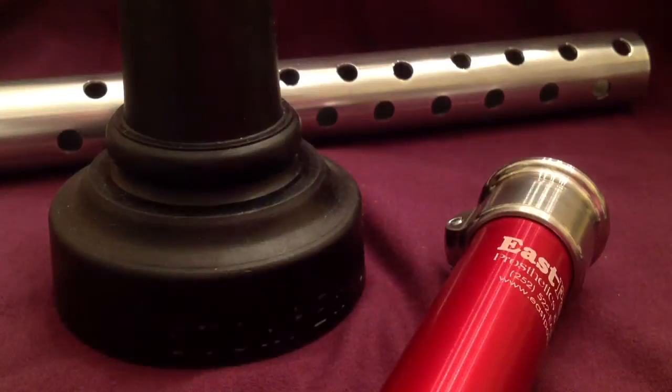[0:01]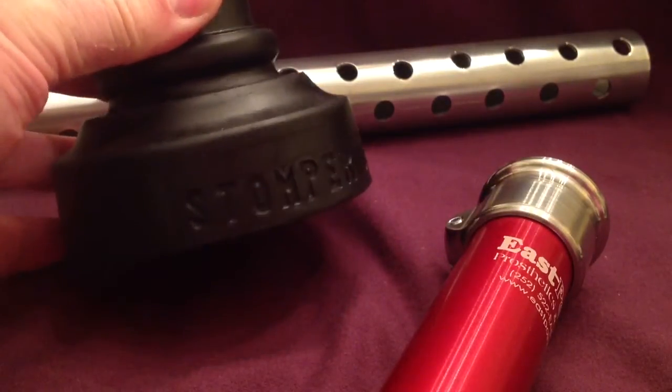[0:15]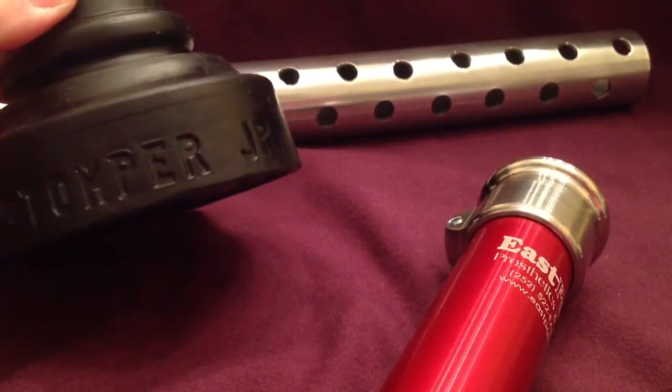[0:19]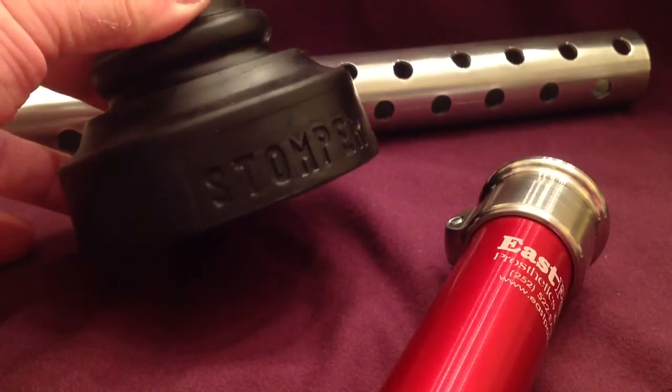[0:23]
All right, this is for making an adjustable stomper for transfemoral check socket prosthetic fitting or early prosthetic fitting. The key components. I put this together because the parts list that I had from years ago, a lot of those things aren't available anymore, and so I had to source them.
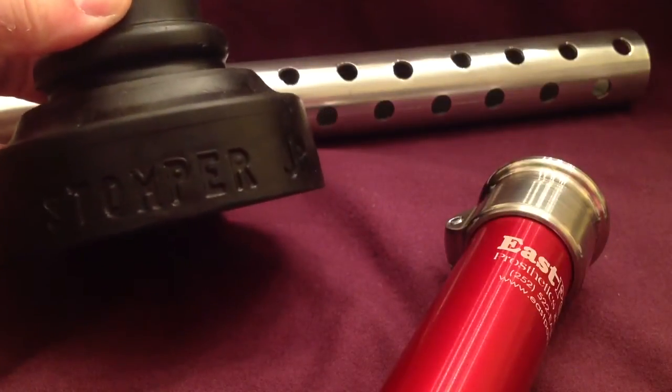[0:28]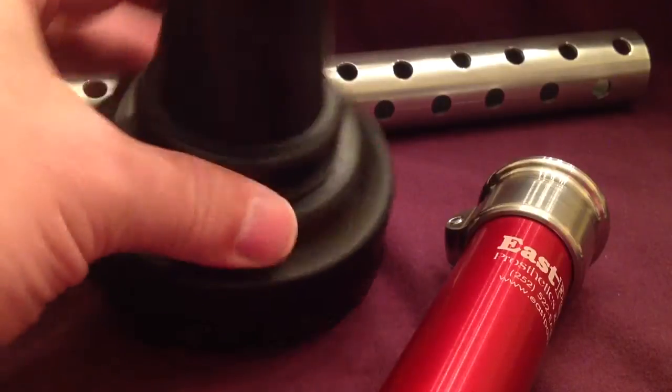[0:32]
I figured to make it a little bit easier, and if you've never done one of these, make it a lot easier. Stomper Junior here, that's readily available from SBS. It's just an overgrown crutch tip, basically.
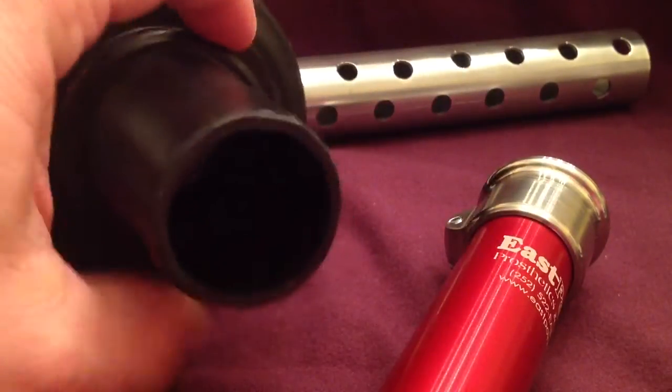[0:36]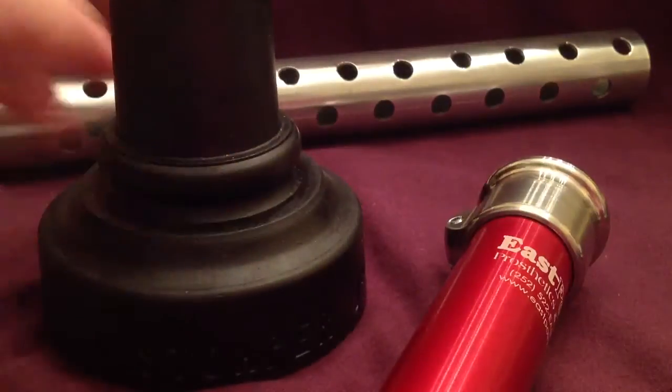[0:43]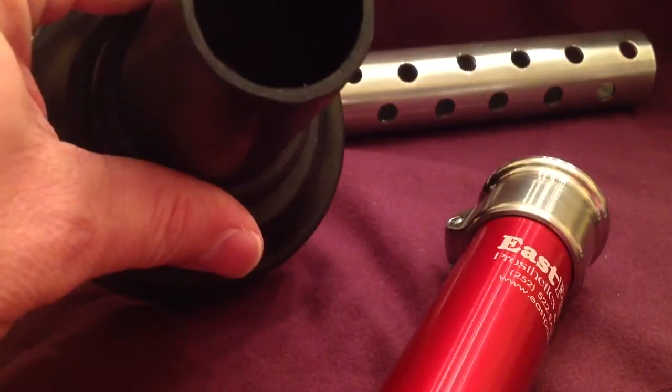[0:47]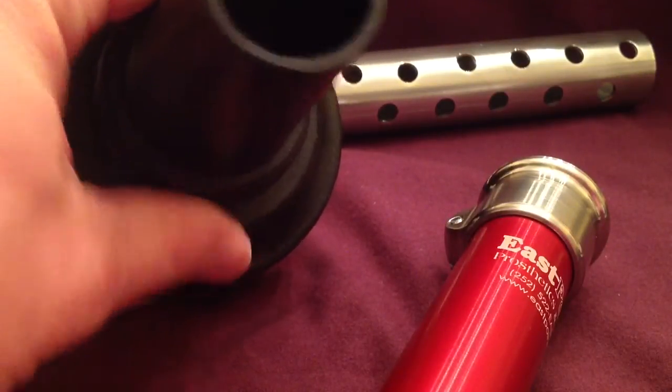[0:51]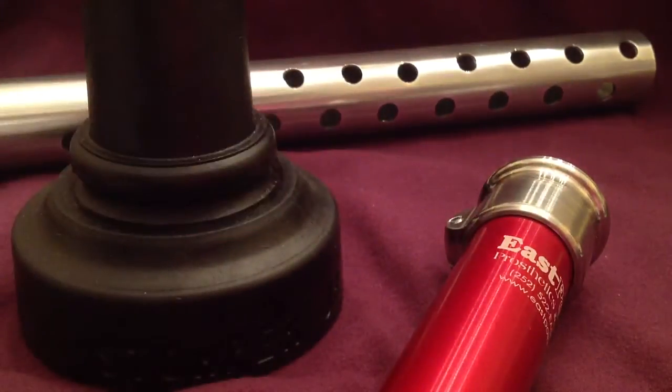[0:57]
The Junior refers to the size here, and that's sized to fit a 30 mm pylon, and it will take the outer sleeve tubes. So you can probably put something close to 40 in it if you needed to. The Senior is the same basic design, but it's set up to take like a 2-inch PVC pipe for someone wanting to do a shower leg or something along those lines.
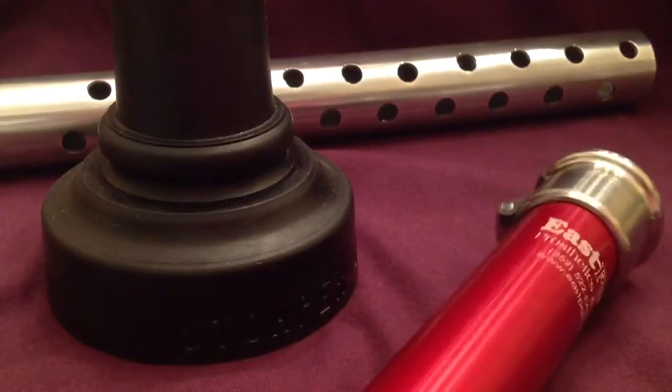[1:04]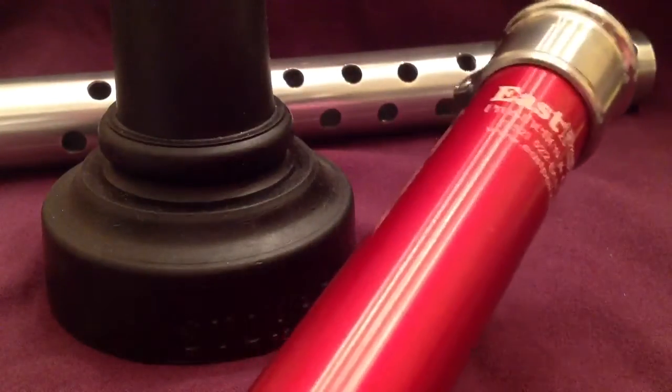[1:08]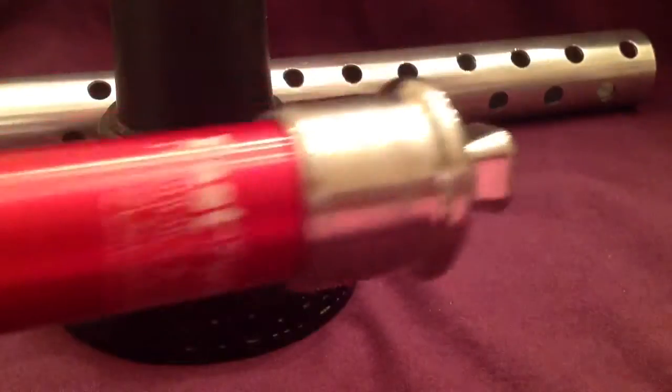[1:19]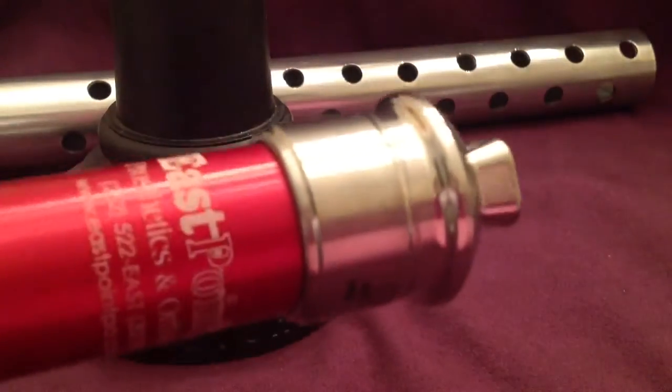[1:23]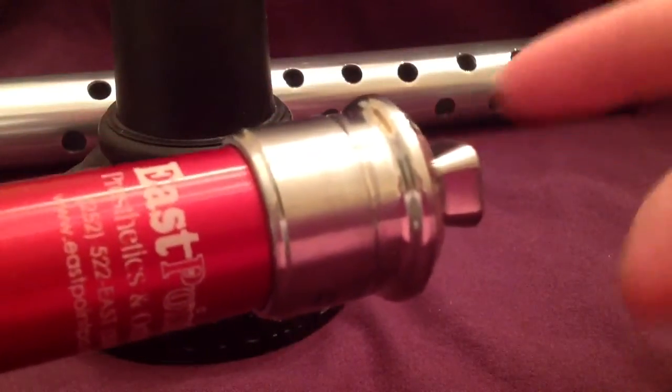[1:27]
Main components here, we just have a 17-inch regular 30 mm pylon. I chose to put the 30 mm sleeved inside the other one going towards the top, so that you can use regular 30 mm components to change that up at the top. If you have a particular length issue or you're matching it up to a particular knee, sometimes you might need to change the pyramid adapter out.
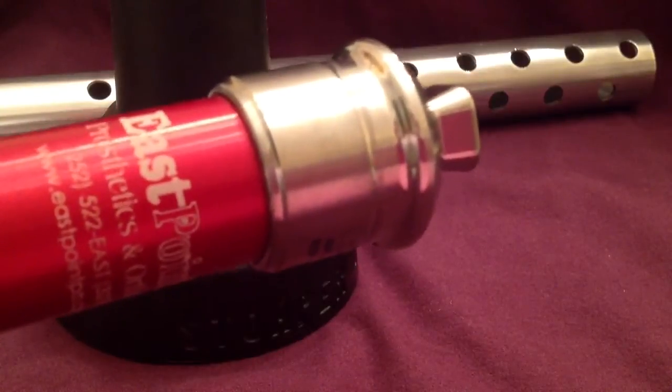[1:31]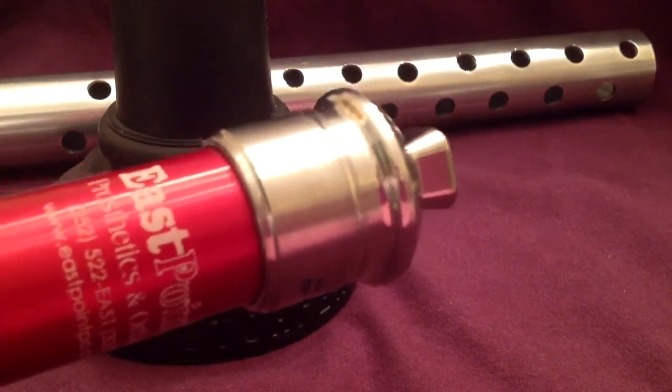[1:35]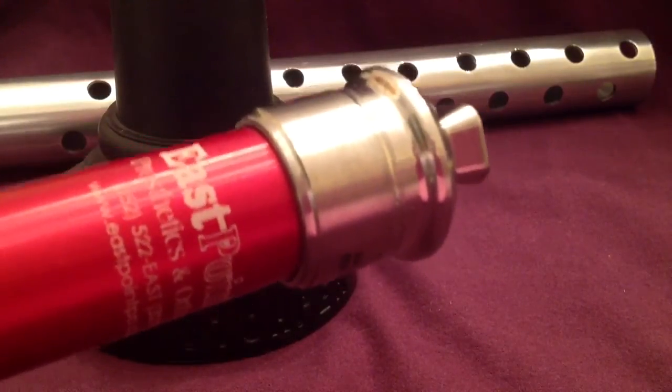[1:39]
I keep the male pyramid on there most of the time because most of my check sockets will have a female rotatable pyramid on them, and that's what we carry over into the definitive to attach to knees.
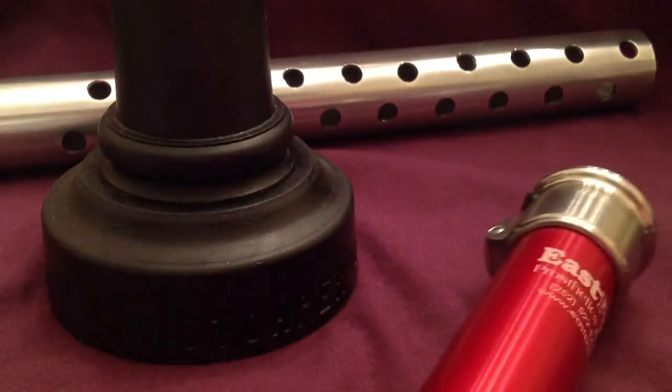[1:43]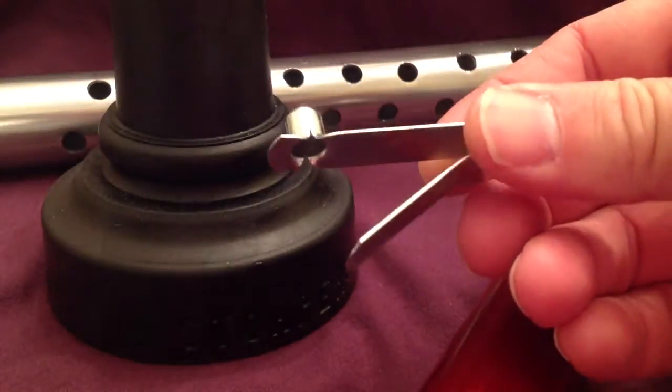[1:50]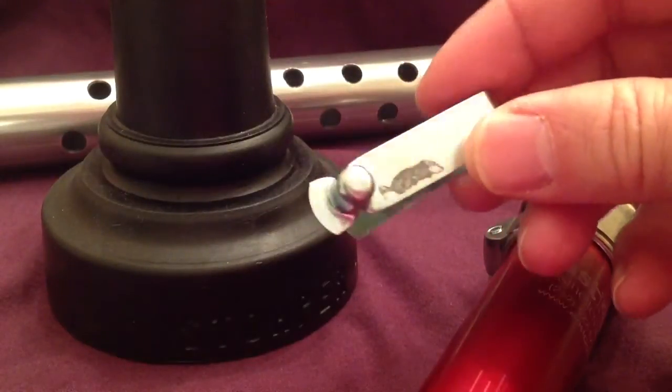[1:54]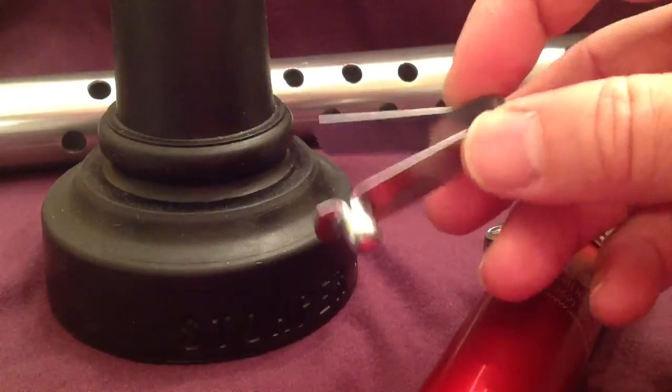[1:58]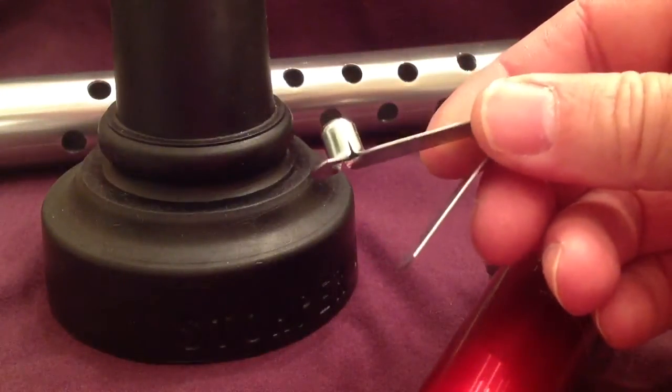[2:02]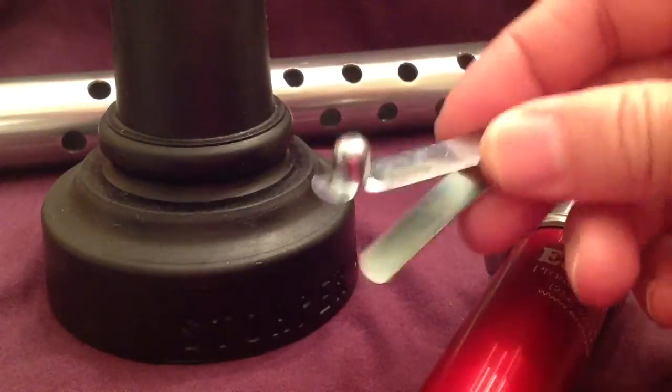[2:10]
Now, a key thing that you'll need to acquire, one of these little spring clips. They are what's inside of a walker for an adjustment, or sometimes you'll see them as part of a wheelchair or crutches. This comes out of a bedside commode that I just got. It was a parts piece at a DME provider locally, and they gave it to me, and I just ripped these out of it.
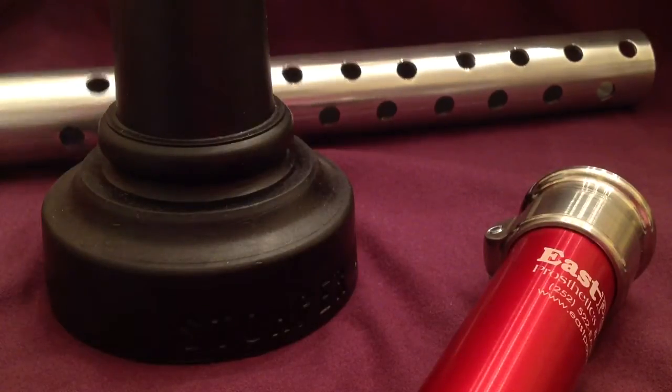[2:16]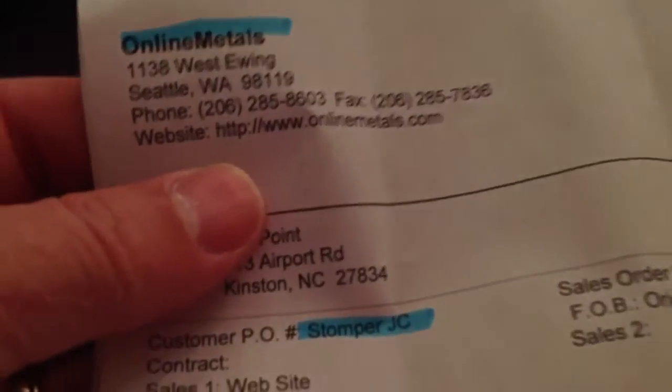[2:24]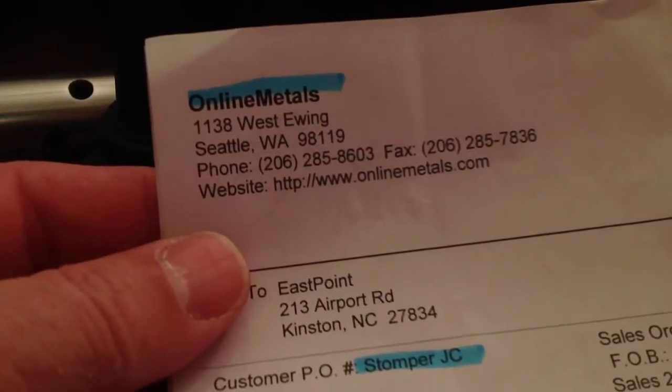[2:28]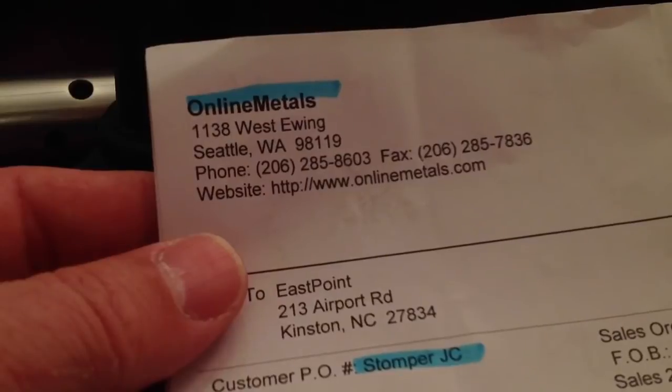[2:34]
I had a little bit more difficulty finding these pieces. So I went online, it was pretty easy to do a search. The folks that I wound up getting it from is Online Metals. They have an excellent website that lets you select aluminum tubing by the internal diameter. So you put in 30 millimeters and see what comes up.
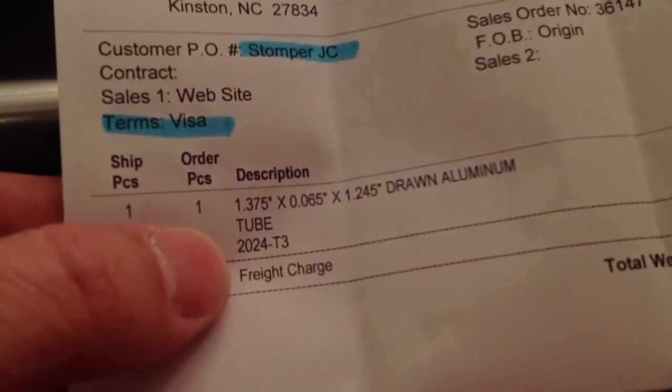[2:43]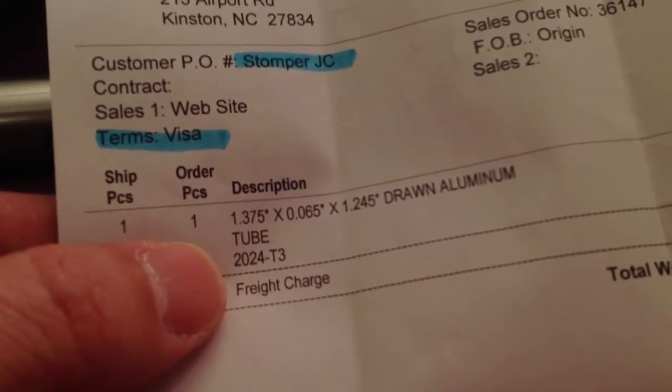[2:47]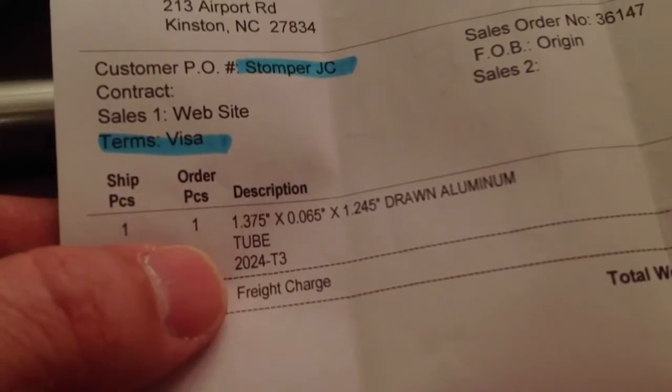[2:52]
And this is the tubing that I got. It gives you all the information. Now that's in inches, but on their website you can do it in millimeters. I do recommend the 2024 tubing for the little additional strength.
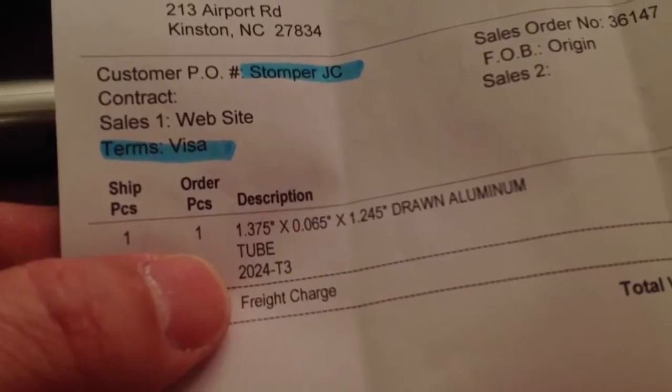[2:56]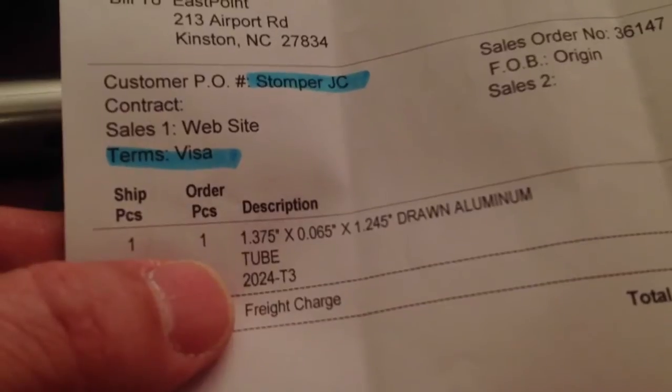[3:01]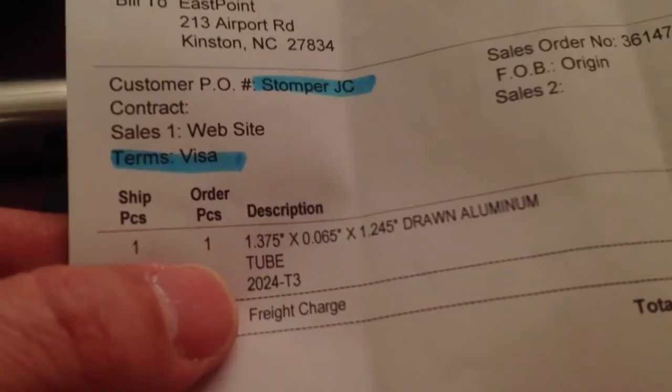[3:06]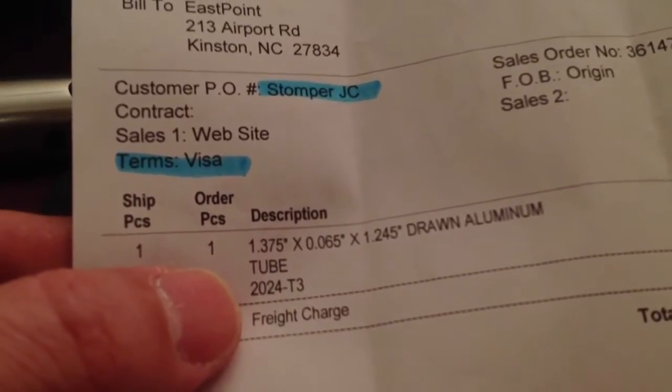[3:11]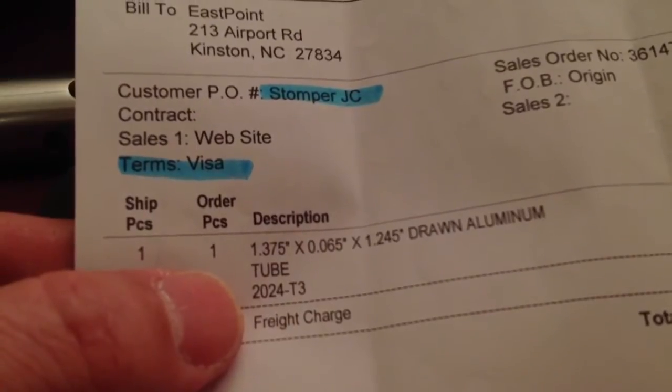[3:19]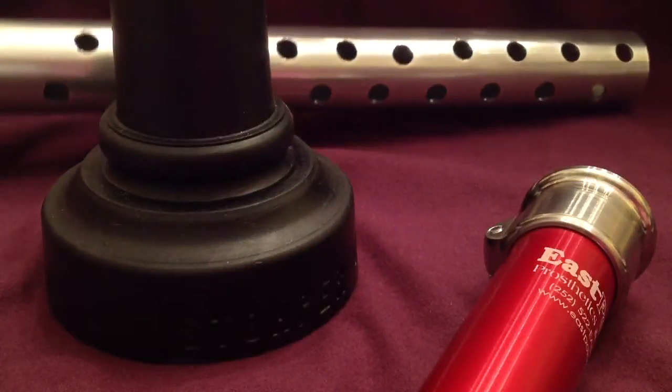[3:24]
There is one size down from this as far as internal dimension that will still, I believe, fit no problem over a 30 mm pylon, but I have used stompers with that size before, and if they're not deburred perfectly or if you get something down inside of them, they tend to jam up and bind a little bit. So you don't really need a real tight tolerance. I'm happy to have a little extra space in my system, easier to adjust. Just keep that in mind, that's why I did that, but you can use the tighter one.
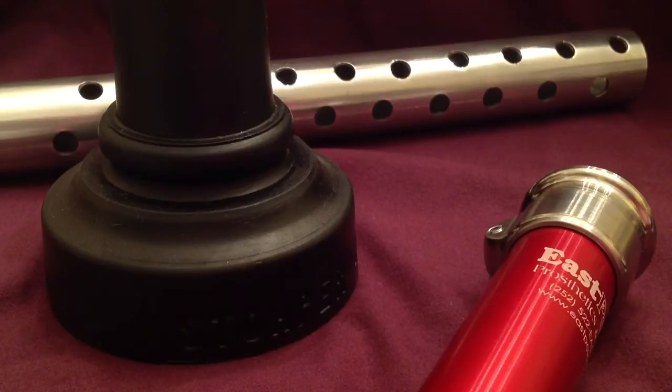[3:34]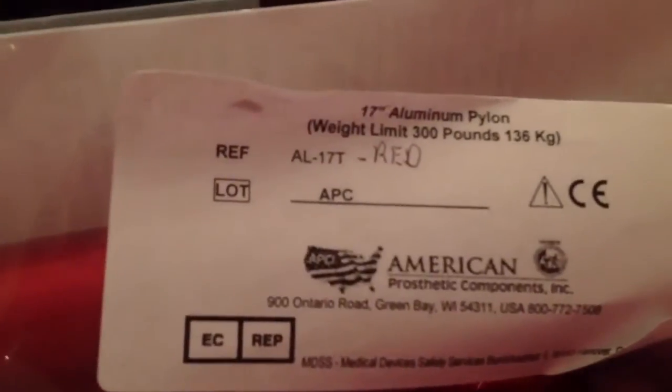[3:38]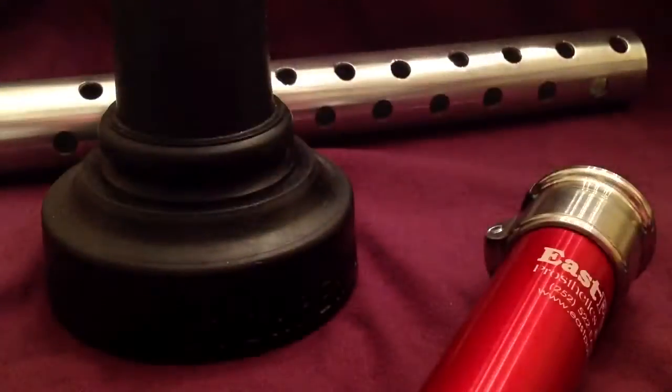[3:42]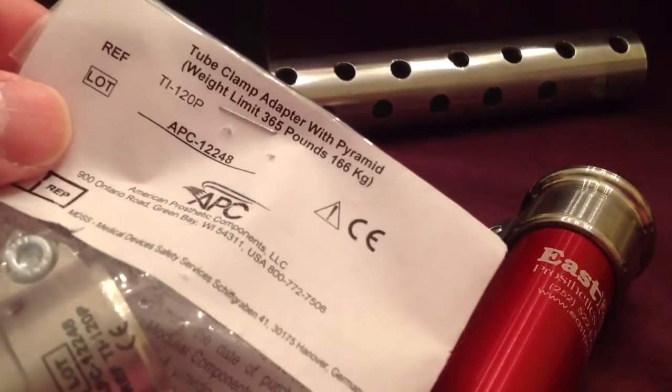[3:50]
Now, the part numbers, we're using American Prosthetic Components. There is the 17-inch pylon and the male pyramid. Just want to put in a good word for them.
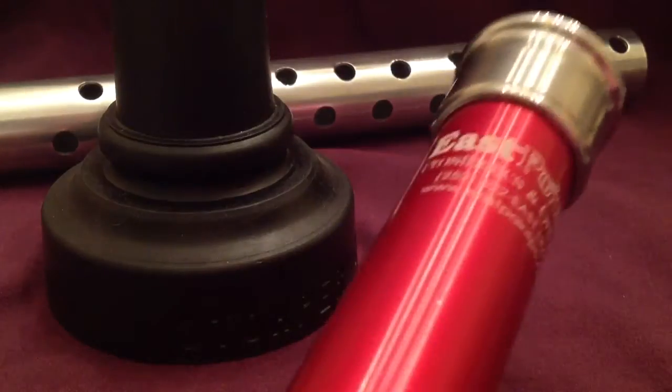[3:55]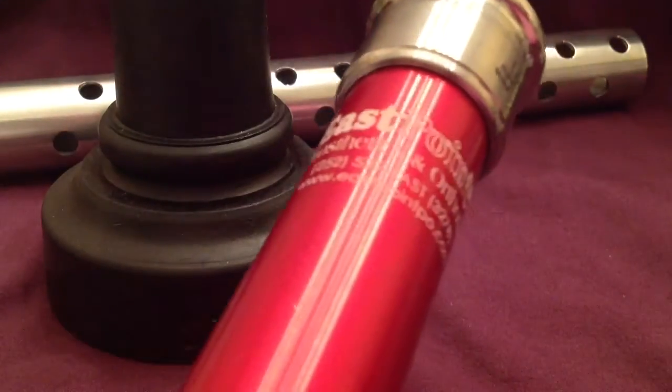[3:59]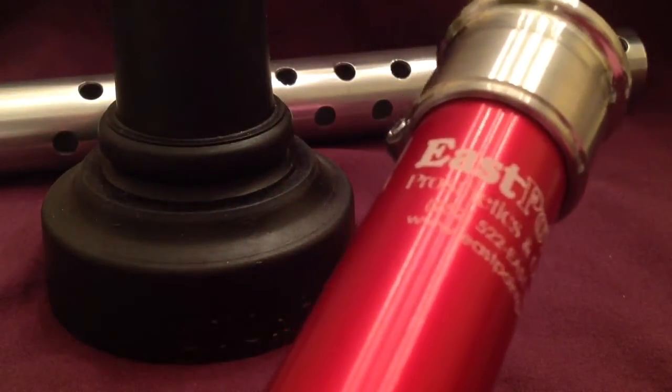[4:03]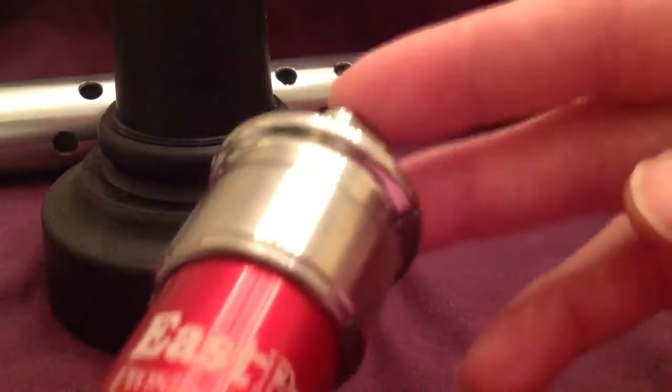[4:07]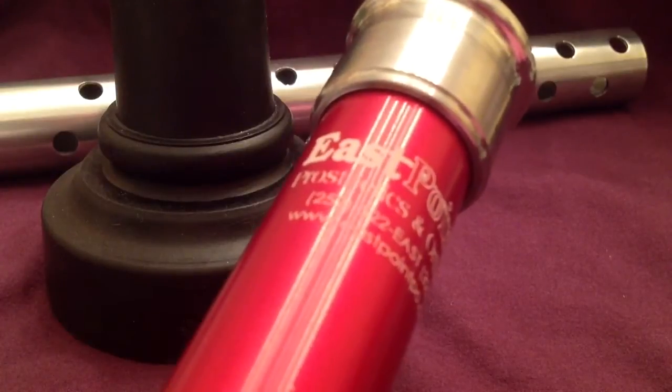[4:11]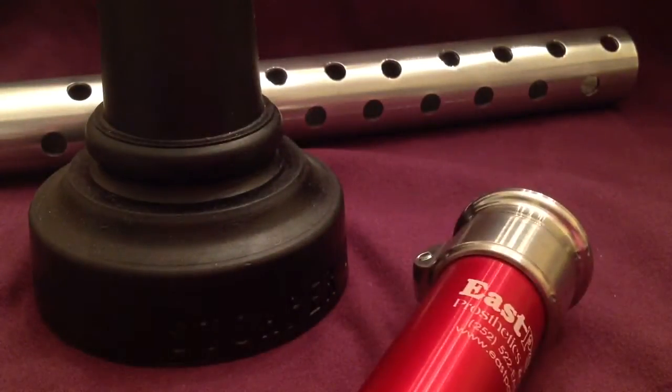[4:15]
They were great. The logo that they usually do for us, laser etch or whatever it is, of course, that's normally at the bottom of a pylon, and I needed it at the top, set where this component could go on the top and it still shows the logo. And they made it really easy to do that. So I definitely recommend them in that regard.
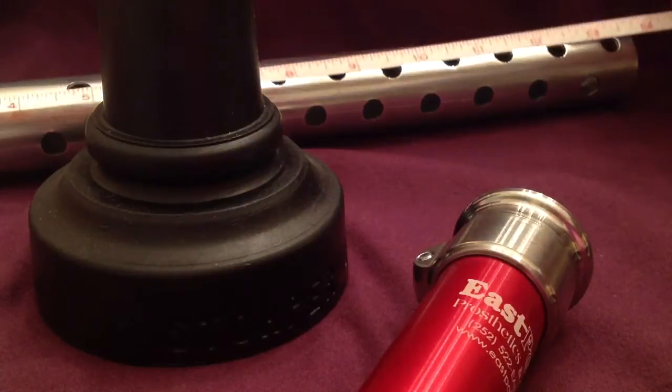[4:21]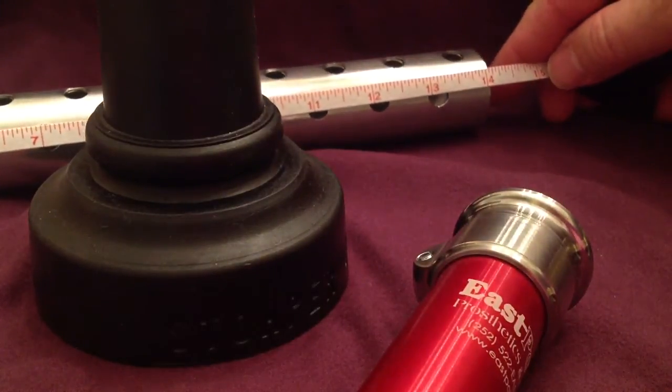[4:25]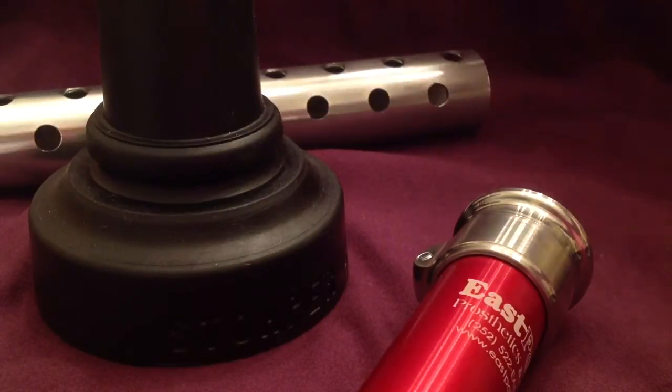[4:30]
Now, when it comes to measurements, we have that 17-inch pylon. The outer tube, I made just over 14 inches. Let me show you the reasoning there.
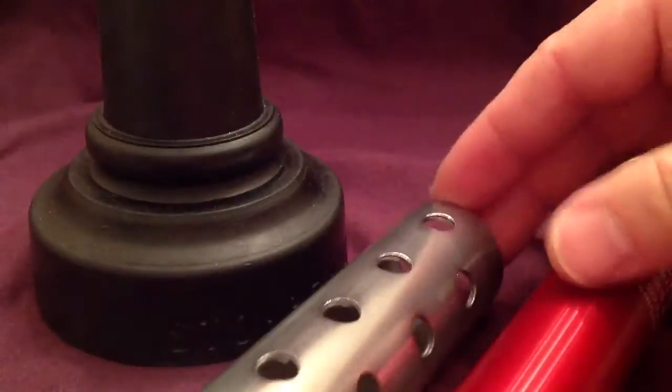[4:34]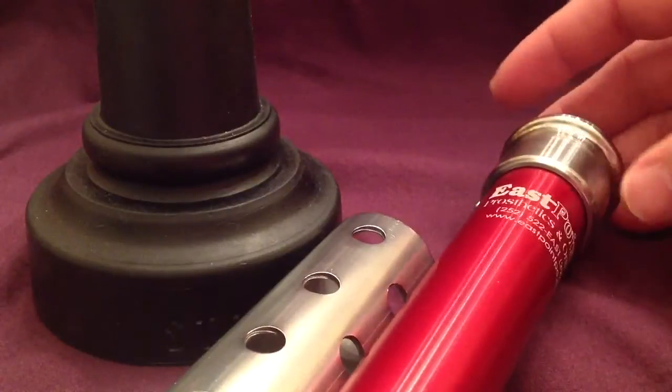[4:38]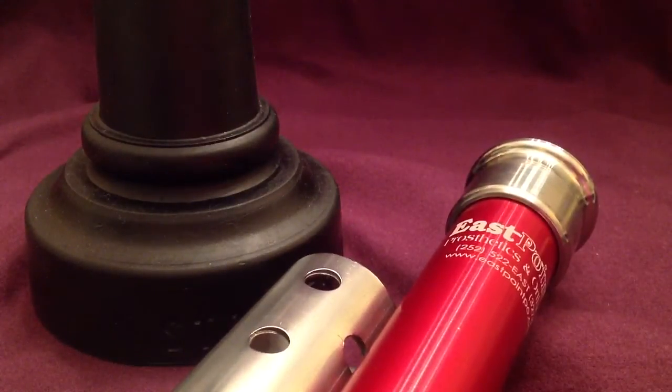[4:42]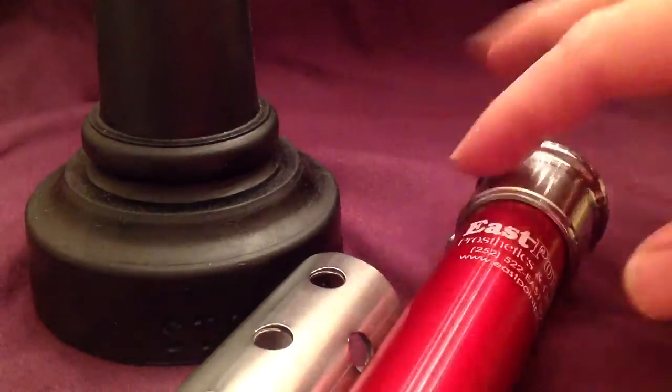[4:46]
If we match up the inner and outer tube, it still leaves the logo exposed and the male pyramid. So we're not wasting any space and we're not trashing our logo with the up and down.
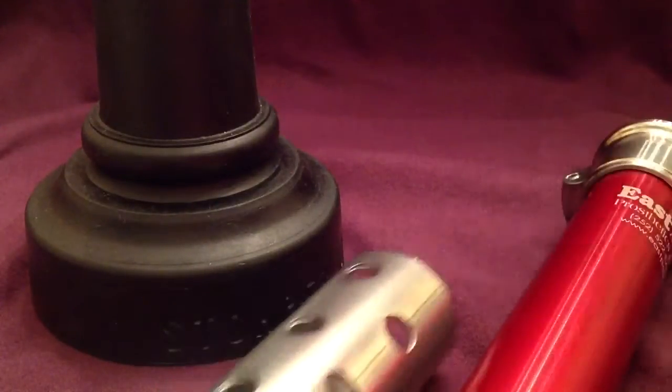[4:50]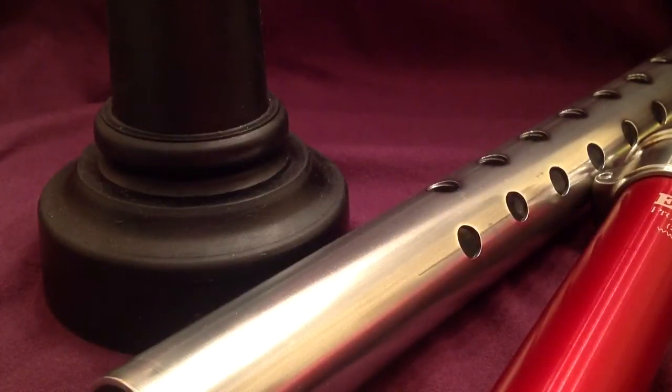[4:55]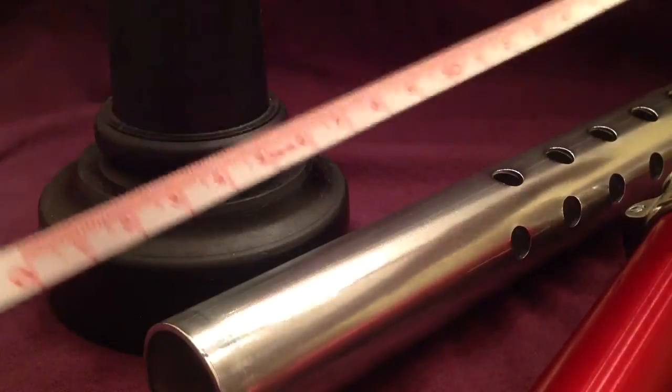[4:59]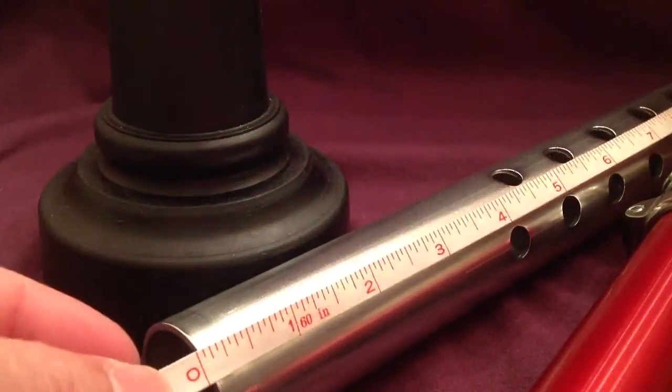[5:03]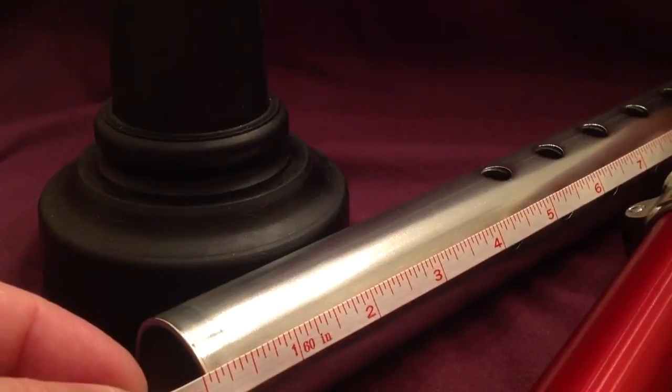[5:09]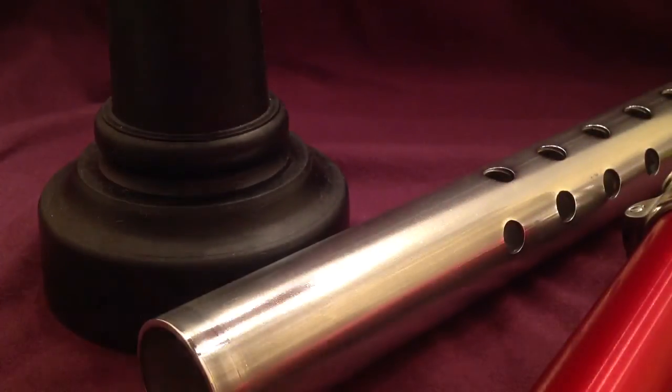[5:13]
Now on the other end, let's see, get this out so where you can see the end. The holes go right to the top. And you can see, let me flip that over, we're just over 4 inches is where they start, or right at 4 inches if you're looking at the bottom of the hole. Reason for that is that's what will be sliding inside the stomper.
And I've used stompers before that had holes all the way down into the stomper. If you get stuck in one of those, it makes it really difficult to get out. So you definitely want your last holes ending above the top of the stomper.
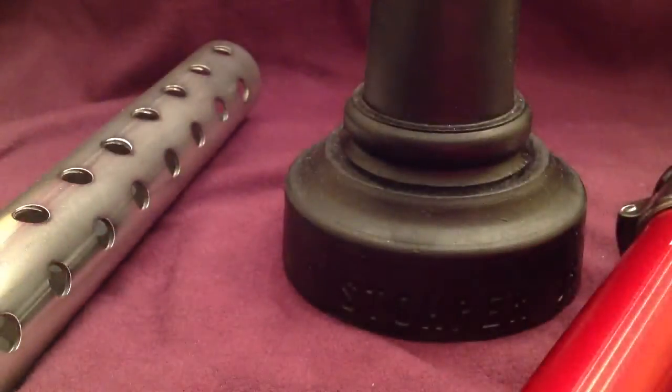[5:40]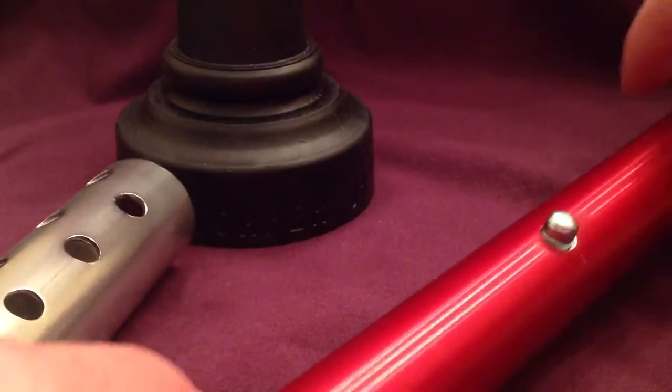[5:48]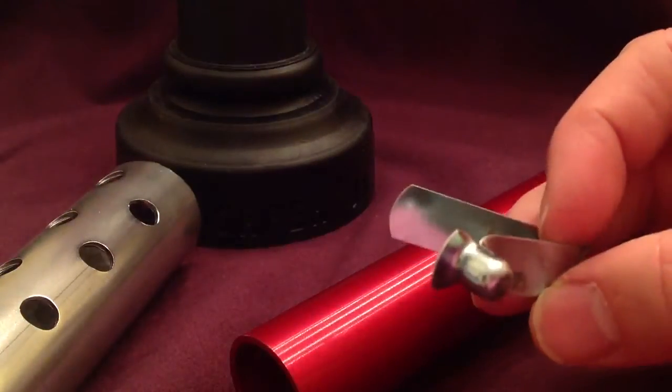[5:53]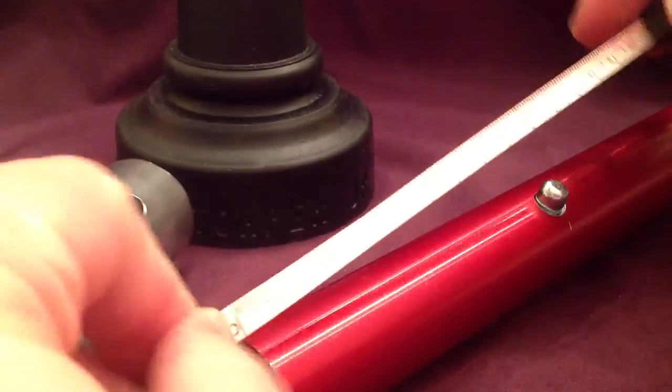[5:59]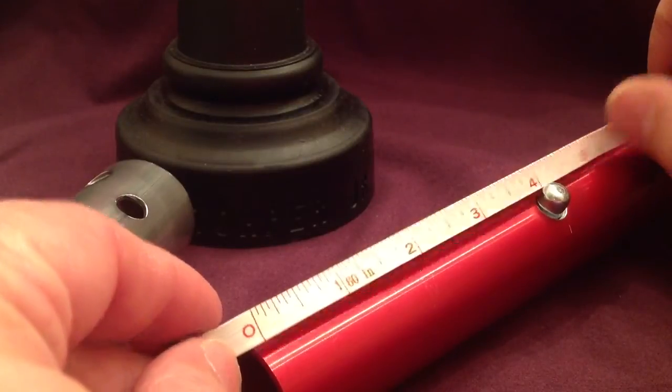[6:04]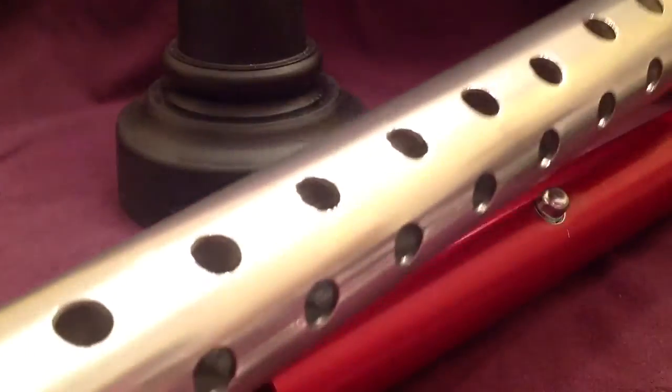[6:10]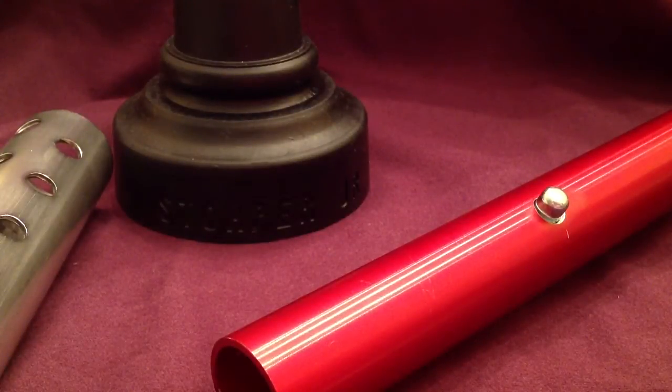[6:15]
Now, knowing that your last holes are above the top of the stomper means that you want to put your inner spring clamp, spring adjuster, on your pylon where that's going to be in the same area, so when they're close to the same length all the way down, that's engaging the last hole in your outer sleeve without going down in the stomper. This just gives you maximum strength, maximum depth, maximum adjustability.
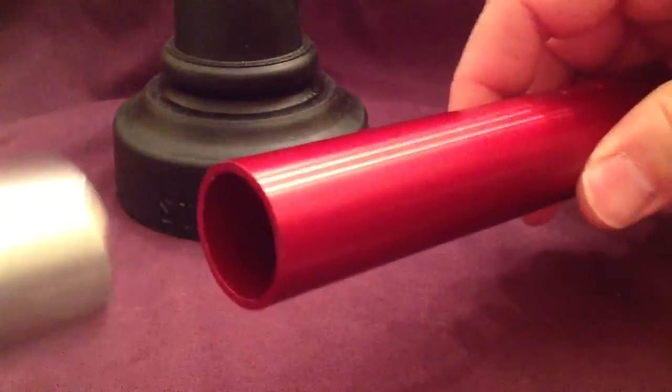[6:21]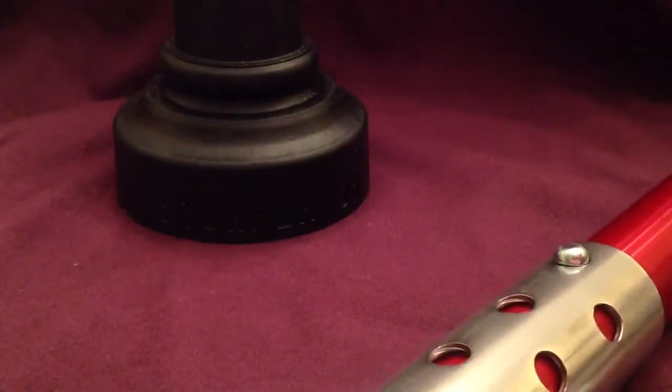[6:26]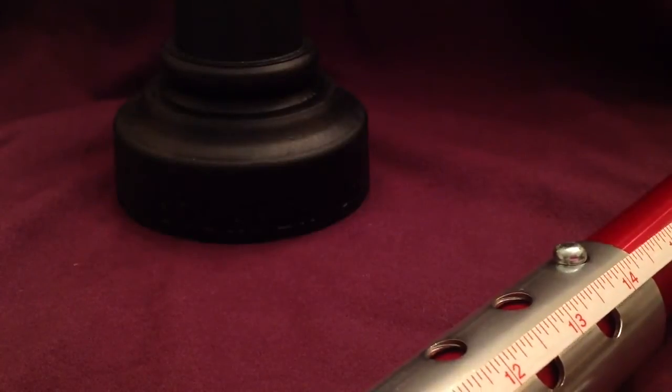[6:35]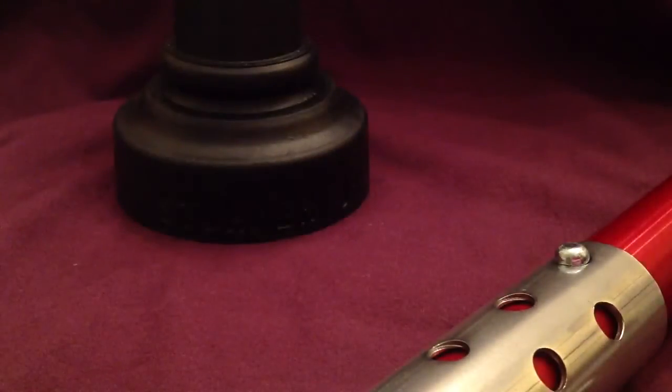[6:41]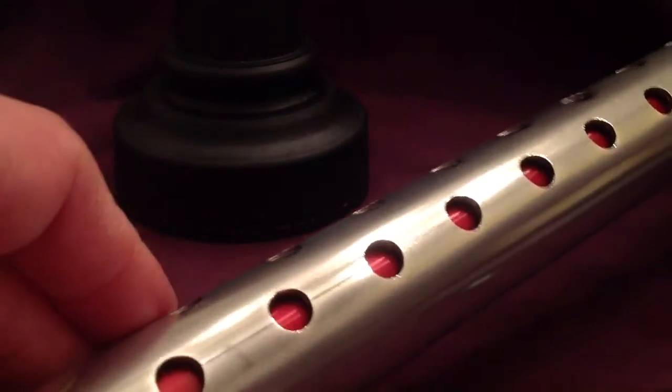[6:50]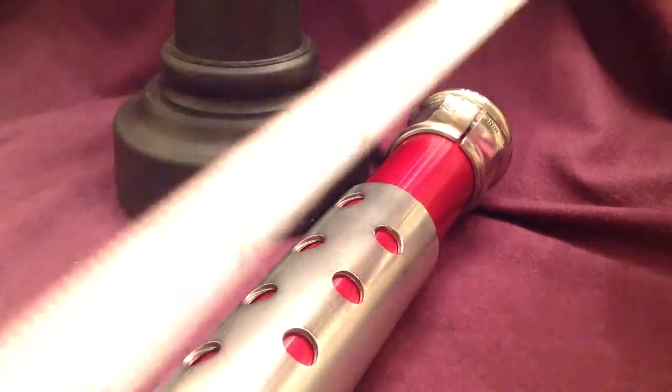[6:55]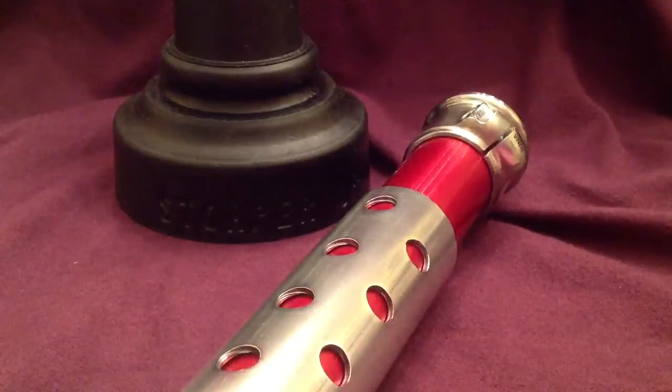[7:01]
All right, let me slide these two together so you can see what I'm talking about. So, at its all out length, now I'm not going to include the stomper in this length. Stomper only adds a little bit to the very bottom, but say top of the pylon to bottom of the tube, we're looking at over 26 inches. And then when we slide everything all the way down and in, okay, that takes us all the way down to 17 inches. So nice range of adjustment.
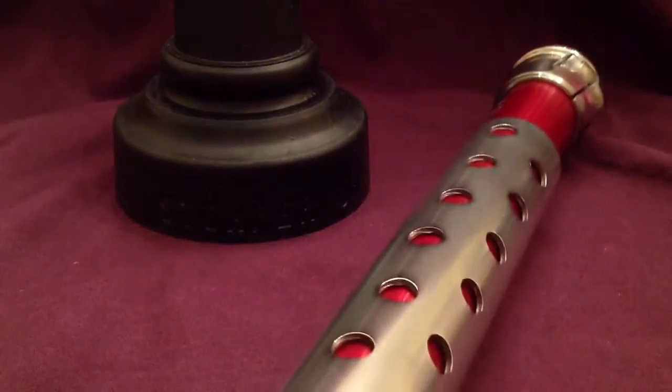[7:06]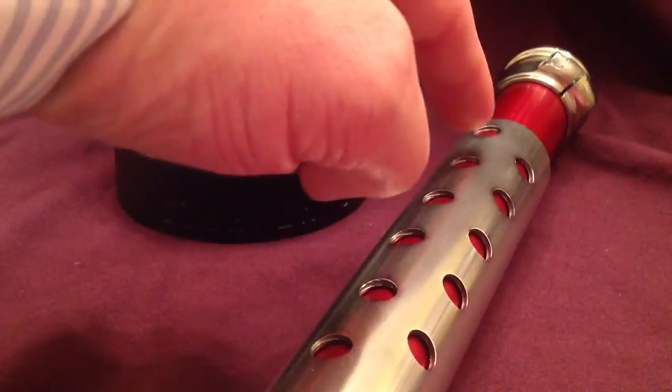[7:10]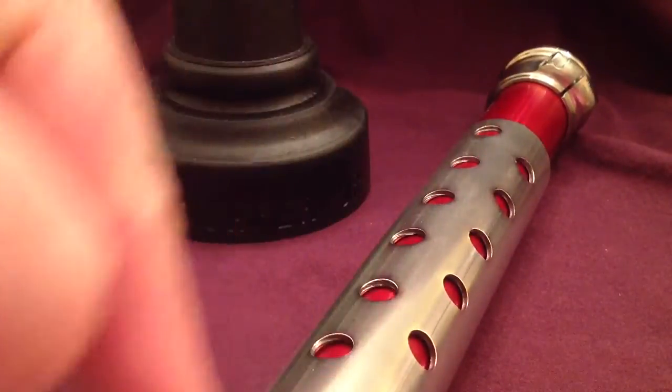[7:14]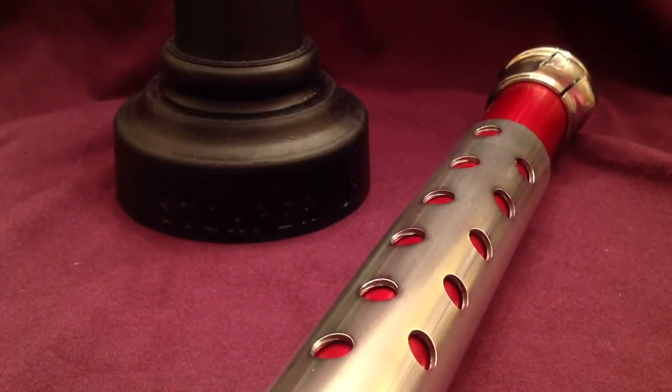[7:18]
Now when it comes to adjustment, I like to have the two rows, and these are spaced at an inch and offset so that you have basically half inch spacing. The reason for the half inch and not metric on that is because more often than not you're using half-inch crepe for height adjustments, and so it just makes it clean if you're transferring things in and out.
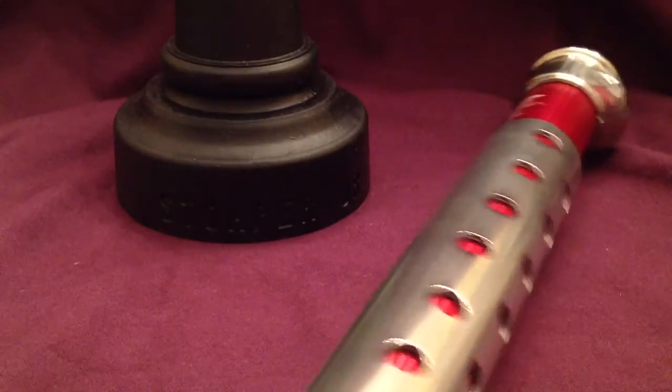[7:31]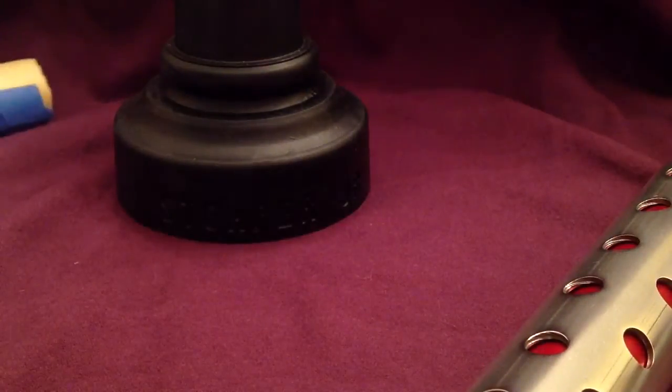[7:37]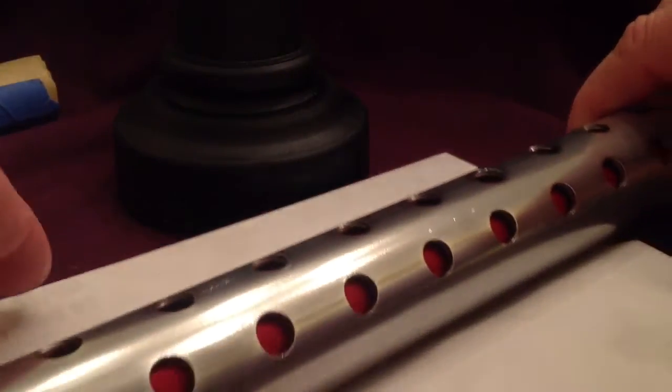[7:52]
Now when it comes to drilling that, you definitely want a drill press. It makes it a whole lot easier. And I made myself a little jig to make it a little bit easier too. Regular piece of scrap, just bend it at about a 45 and ground a flat on it, which makes a nice cradle for holding the tube while you're drilling it.
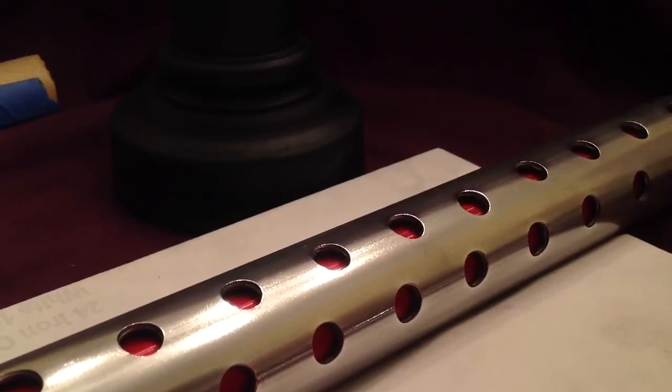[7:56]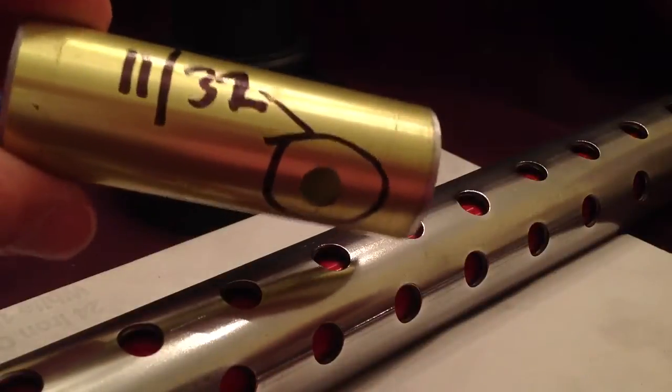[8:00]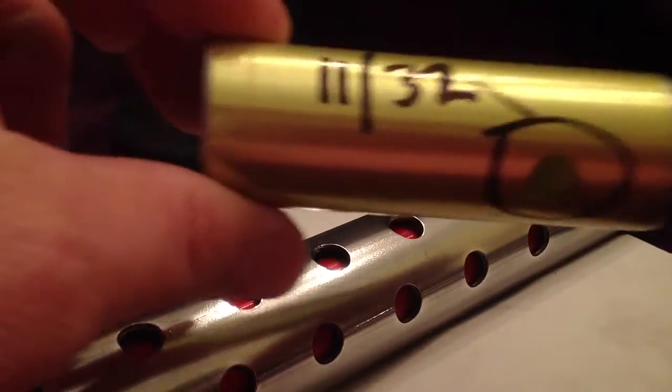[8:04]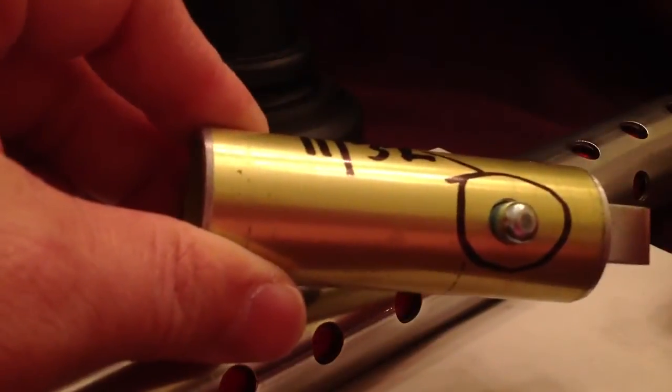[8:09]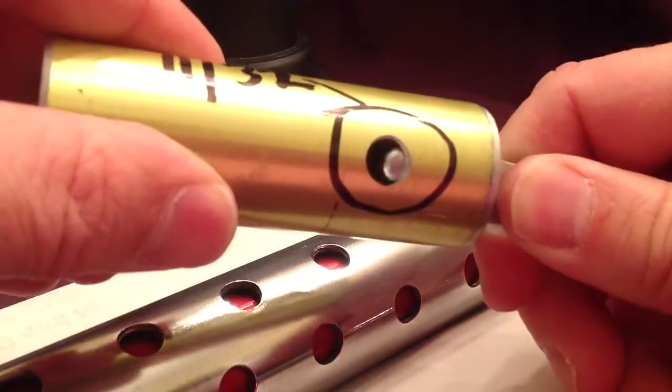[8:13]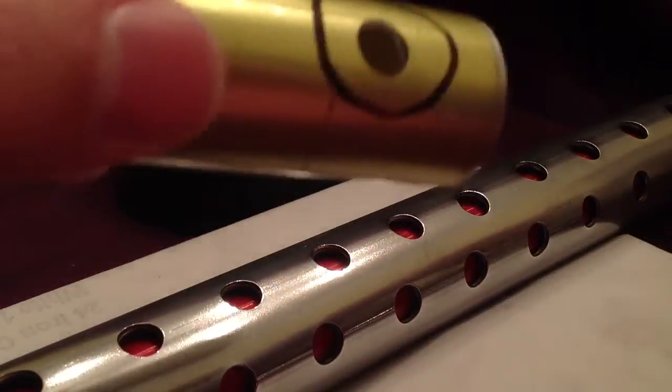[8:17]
Now for my particular spring clip, it was an 11/32 hole, and I just experimented with that to make sure it worked well. These spring clips definitely do come in different sizes depending on manufacturer, so just make the holes to match the size of the spring clips that you got.
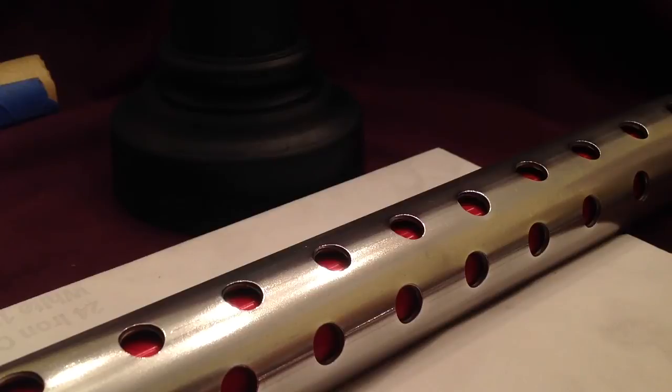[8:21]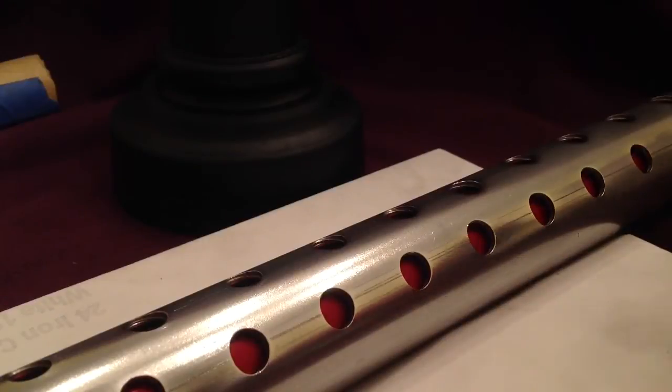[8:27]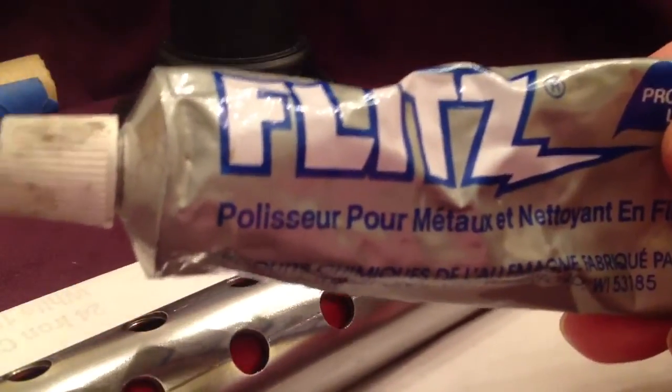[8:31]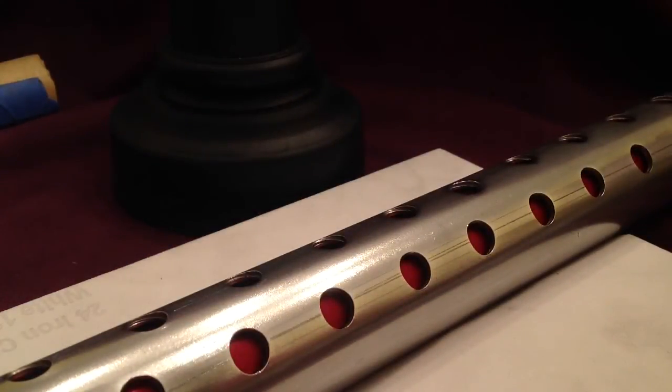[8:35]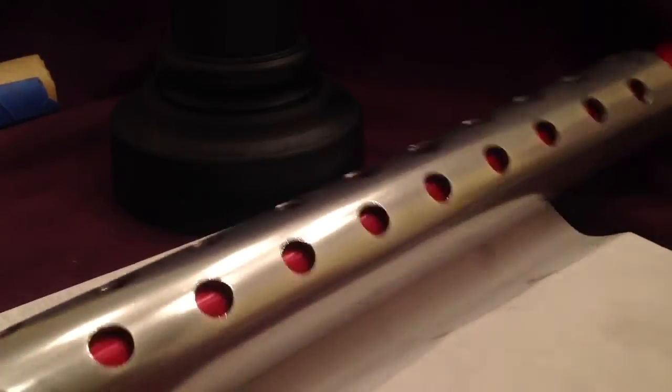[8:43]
The outer tube that I have there did not look that pretty when I got it. I did polish it up. I just used some Flitz metal polish, a metal polish I keep around. Since I made this one, I'm thinking I might like to really polish it up. I believe it's Nuvite aluminum polish that I think I can put a mirror finish on it, and I might show you in a future video if I manage to pull that off.
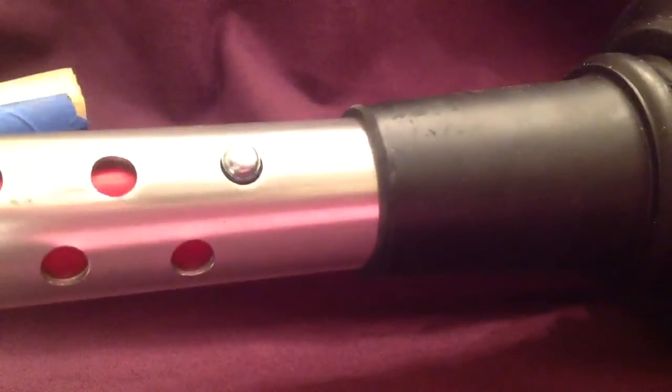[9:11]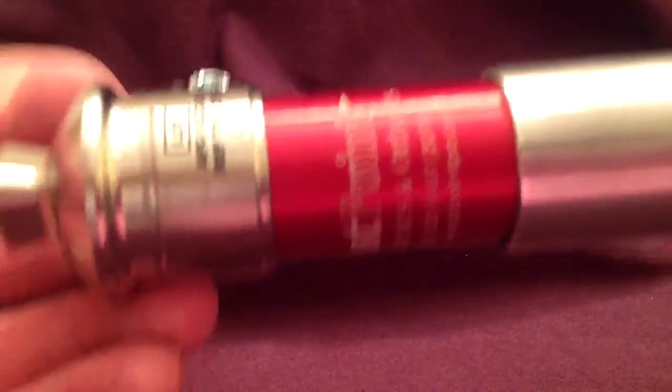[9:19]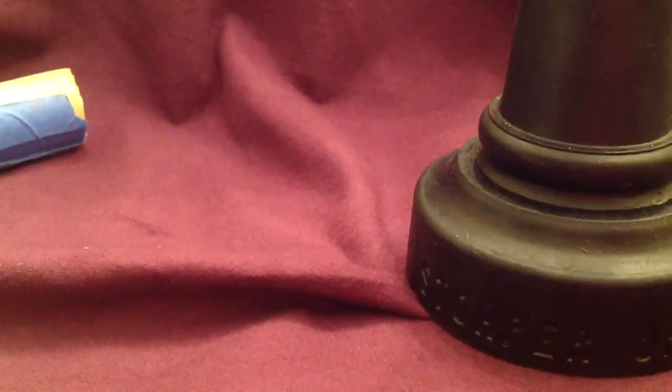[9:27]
All right. Last little piece of assembly here is to drop that whole thing down inside the stomper. All right, and there you have it. So, highly adjustable stomper, logoed, easy to adapt to different applications, and comes in handy when it comes to prosthetic fitting.
Let me see if I can put this down and put you on the wobbly cam to see a picture of the whole thing.